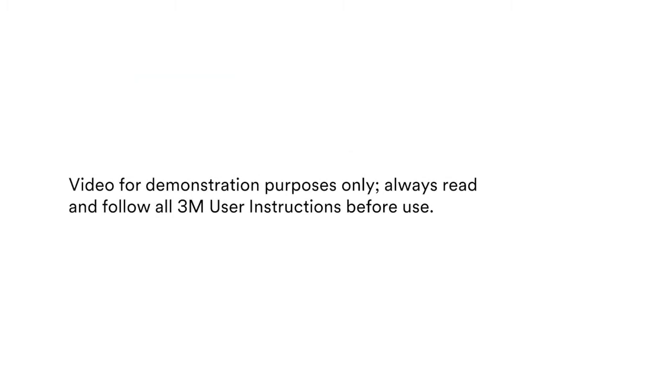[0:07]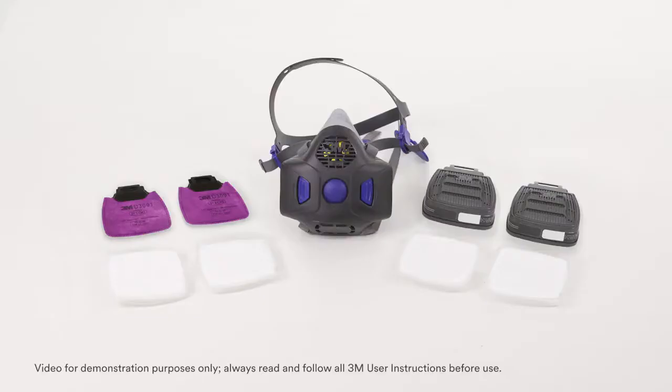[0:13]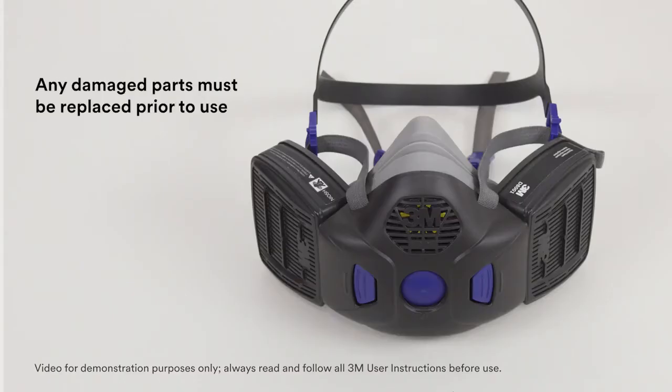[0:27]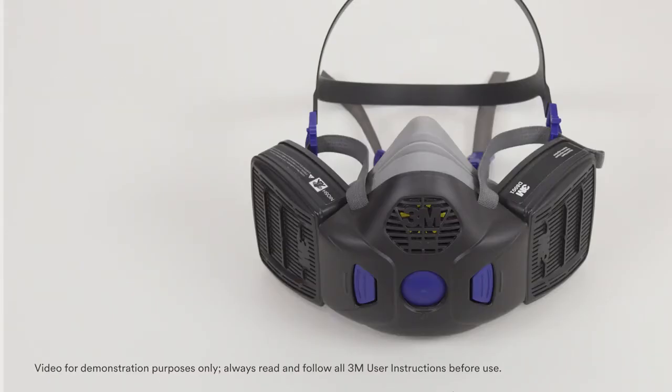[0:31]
Respirator system, including filters and cartridges, must be inspected before each use. If the respirator is dropped or otherwise impacted, causing potential damage, the entire system should be inspected again. Any damaged or defective parts must be replaced prior to use.
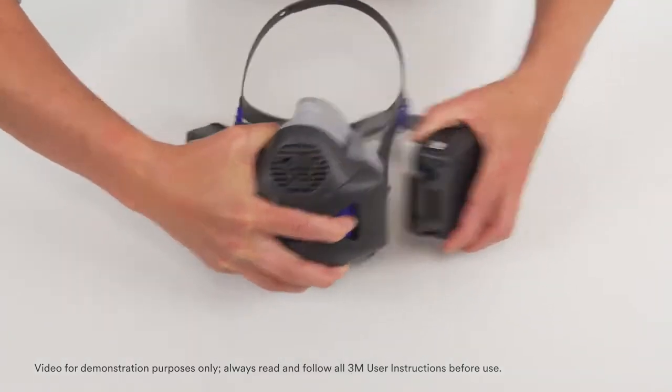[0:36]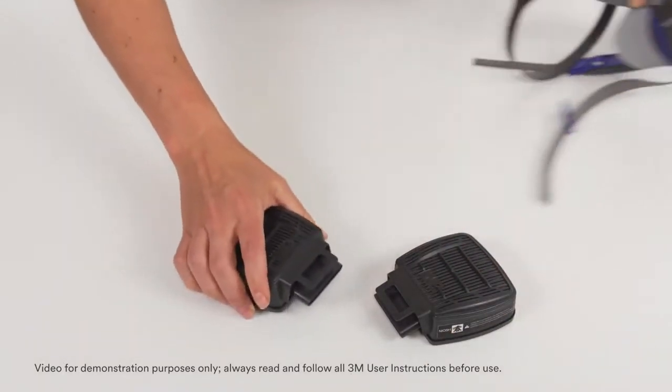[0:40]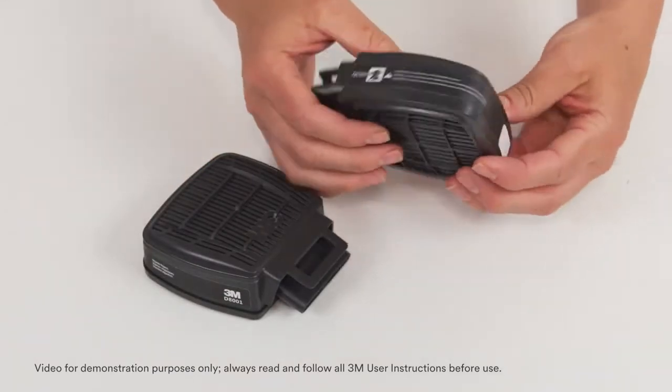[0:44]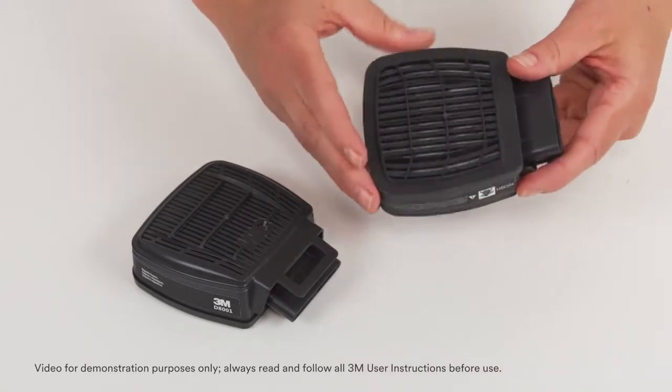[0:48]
Begin by removing any filters or cartridges attached to the facepiece. Inspect filter media for any visible damage and inspect all hard plastic components, looking for cracks or breakage. Ensure the connection area is clean and can be properly inserted and removed from the facepiece.
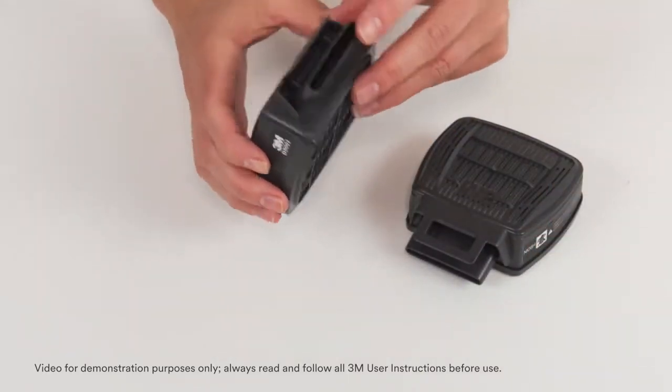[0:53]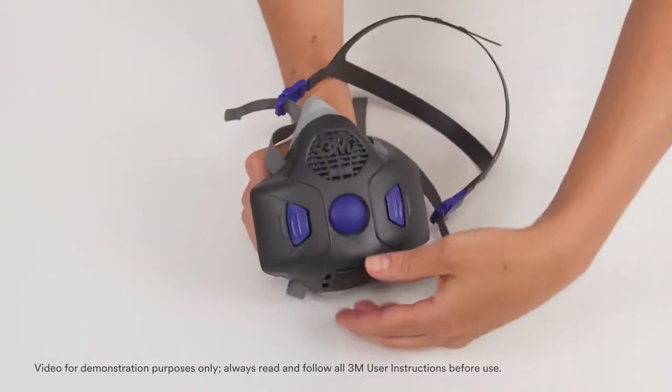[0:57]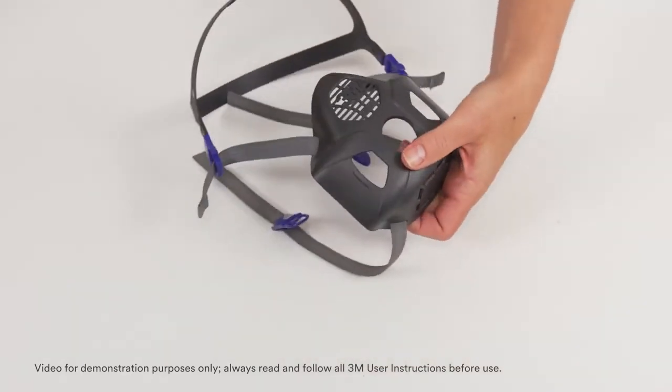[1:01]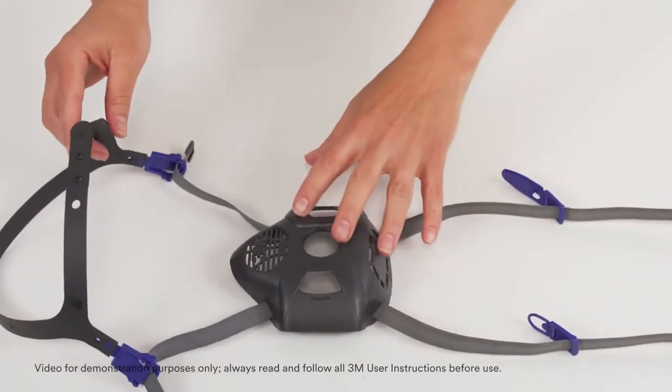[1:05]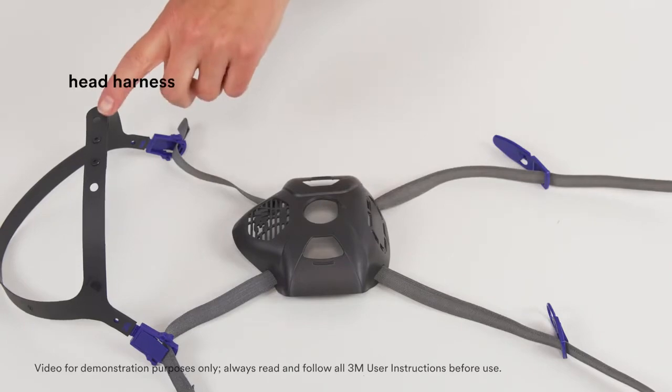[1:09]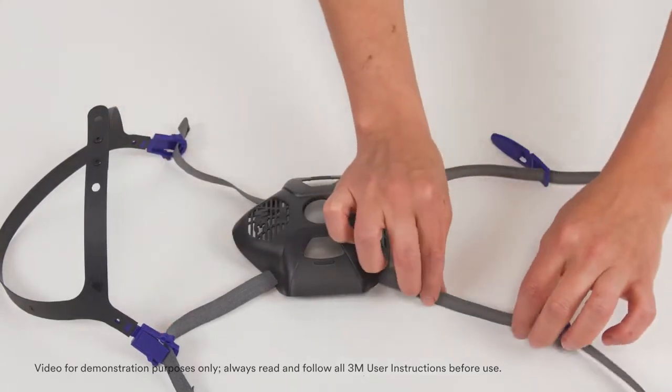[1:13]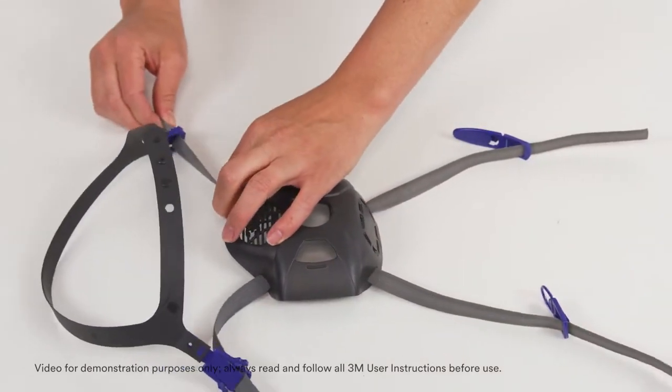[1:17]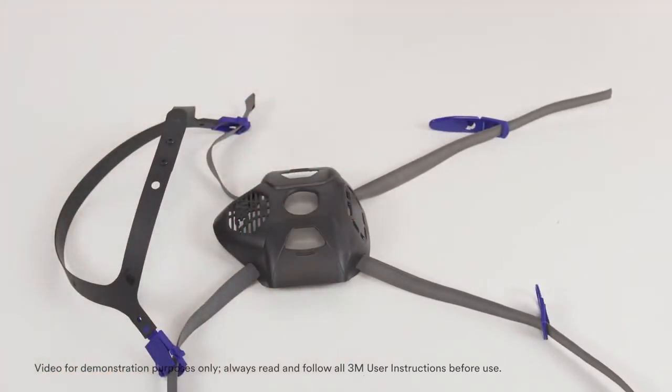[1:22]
Remove the head harness assembly by pulling down and outward on the bottom of the assembly. Inspect the head harness assembly, including the fascia, head harness, and buckles, for damage, cracks, and fatiguing. Make sure the straps are intact and have good elasticity. Pull each strap to see that it shrinks back to its original length.
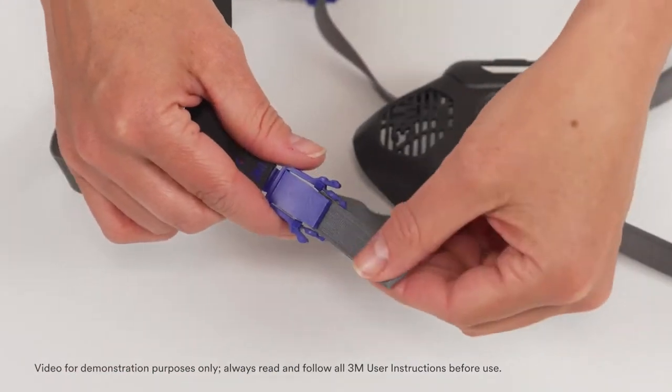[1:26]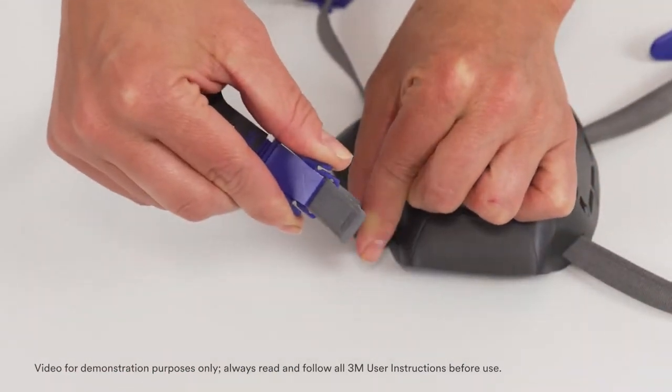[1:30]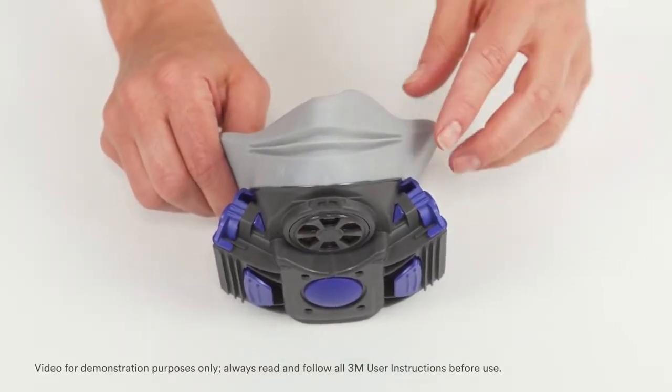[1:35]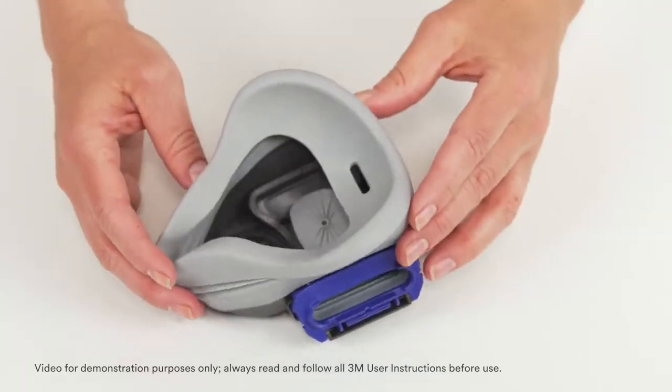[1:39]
Pull the harness straps through the buckles and then squeeze the buckle wings and pull the straps back through to ensure the straps move freely through the buckles. Examine the flexible silicone face seal. Check for distortion, cracks, tears, dirt, or other damage.
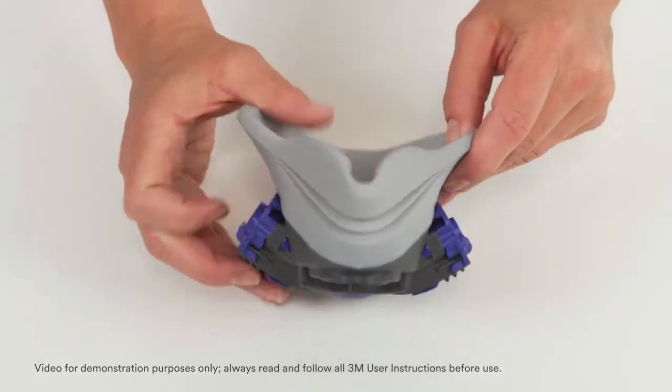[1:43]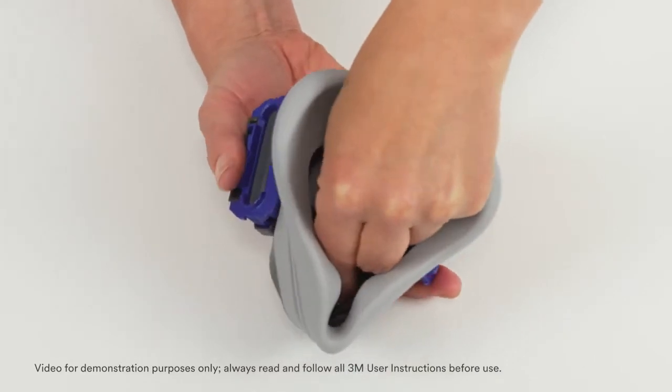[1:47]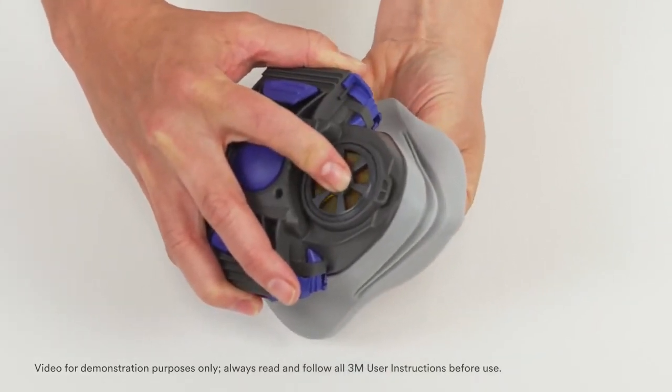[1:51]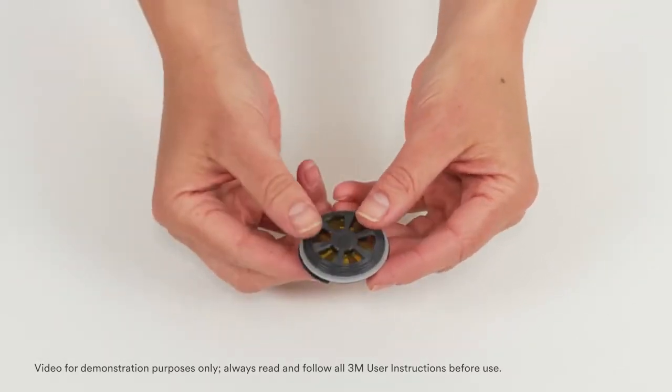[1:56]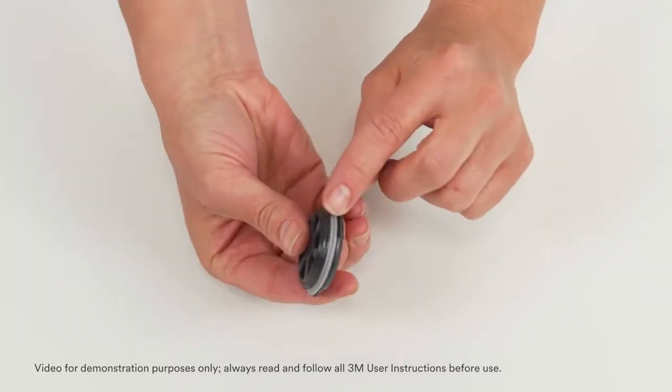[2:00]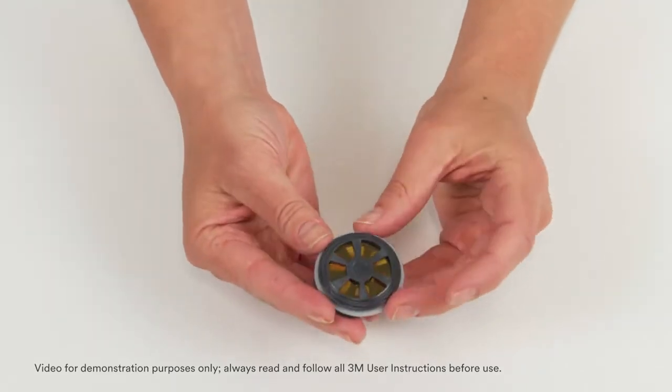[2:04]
To remove the speaking diaphragm for inspection, first, turn the speaking diaphragm counterclockwise a quarter turn. Next, from the outside of the respirator, push the speaking diaphragm inward to remove. Inspect the speaking diaphragm seal for any damage, inspect the plastic components for any damage, and inspect the diaphragm film material to ensure it is intact, looking for tears or holes in the film.
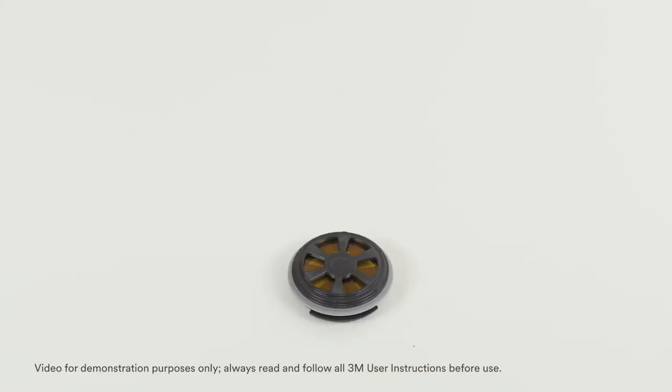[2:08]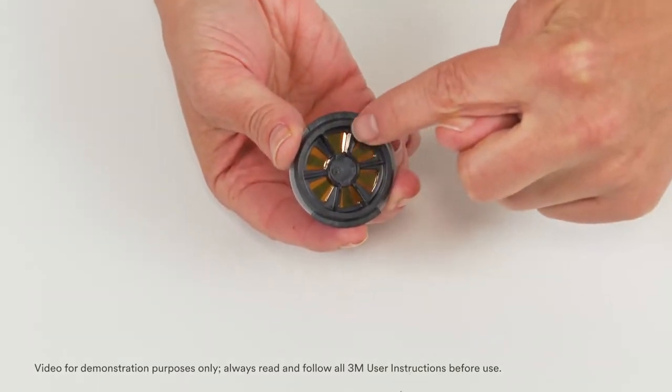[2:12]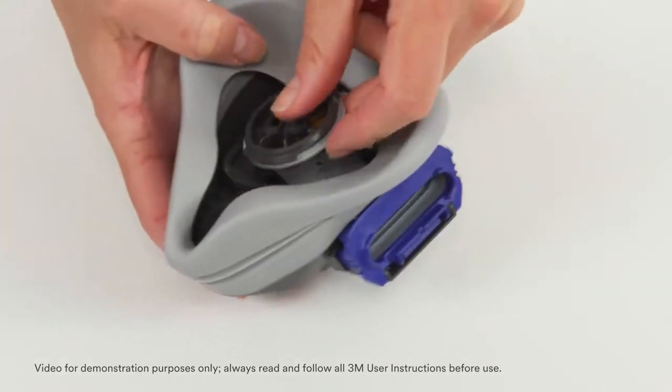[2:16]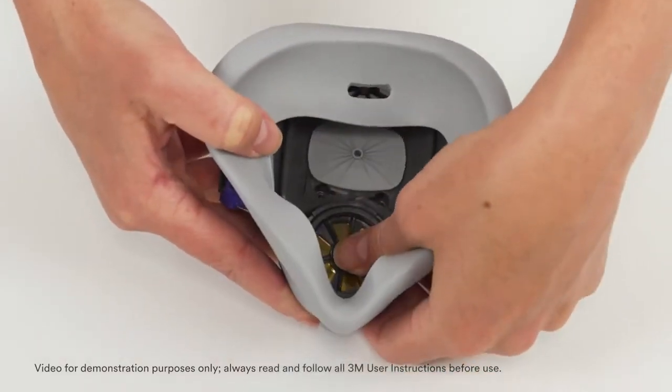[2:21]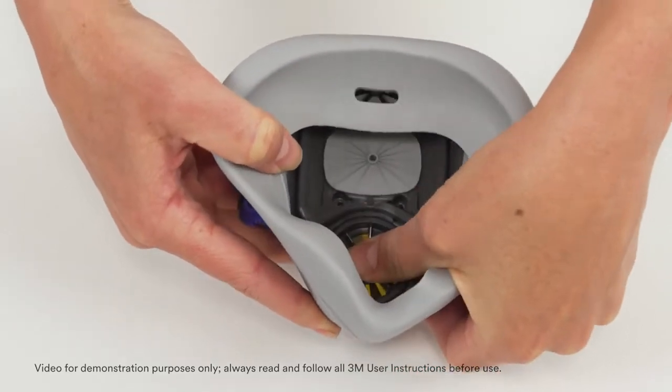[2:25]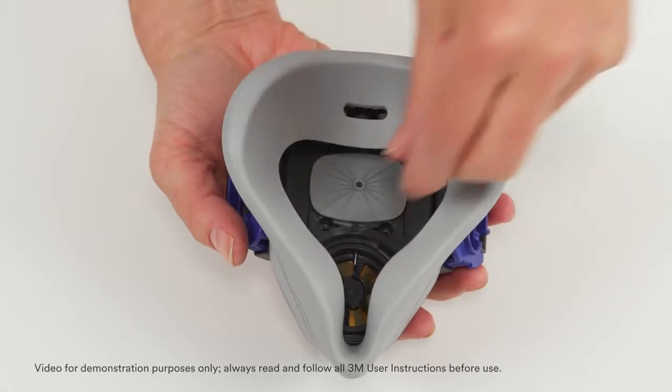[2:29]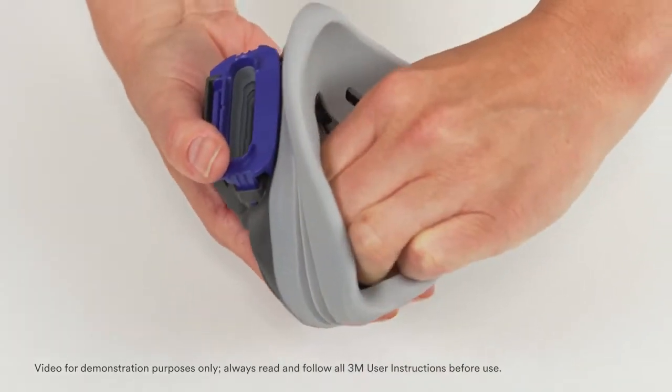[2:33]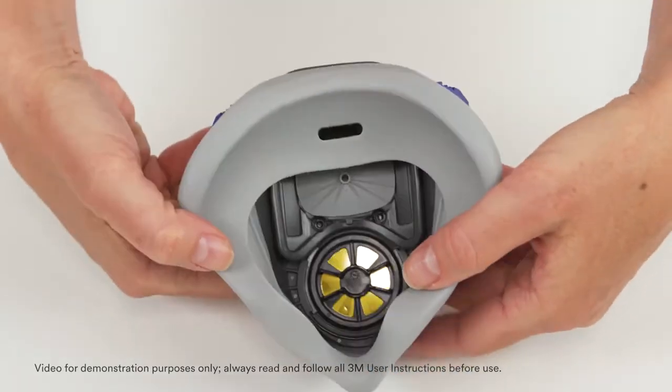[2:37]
To replace the speaking diaphragm, insert the speaking diaphragm into the facepiece opening with the speaking diaphragm wings aligned vertically. Using your thumb, press down on the center of the speaking diaphragm, pushing it fully into the opening to ensure it is evenly and fully seated. With slight downward force, use the thumb and index finger to rotate the speaking diaphragm 90 degrees clockwise until the stop guards engage. The wings should now be horizontal.
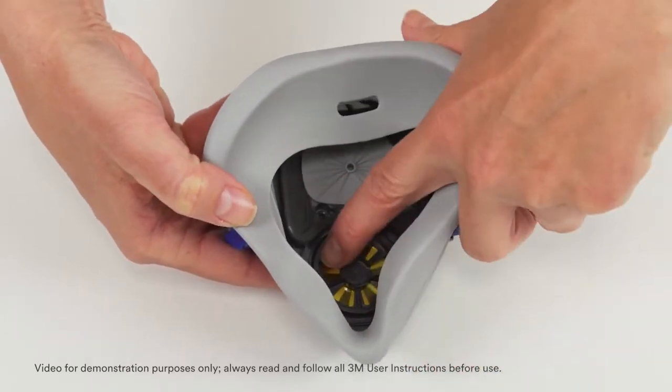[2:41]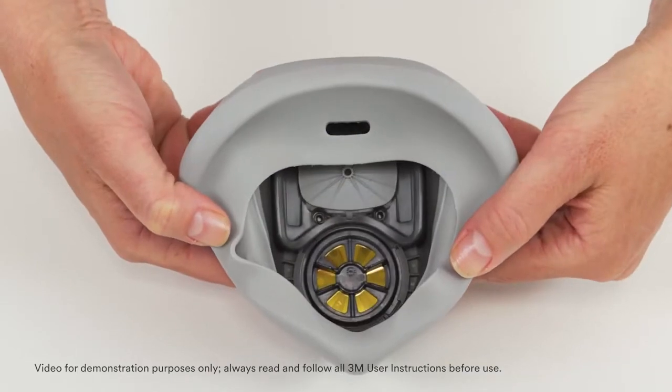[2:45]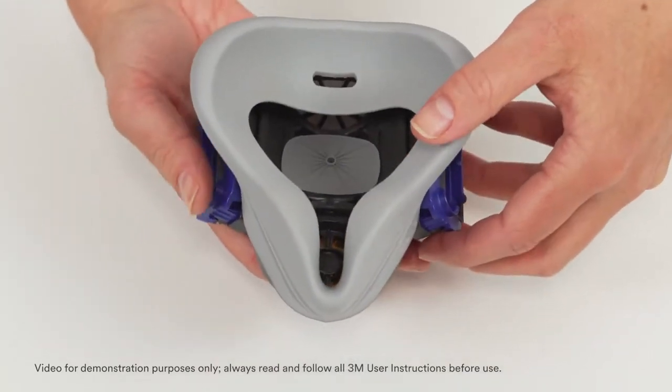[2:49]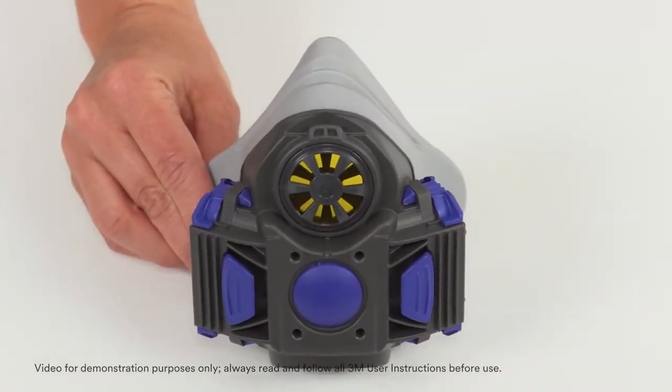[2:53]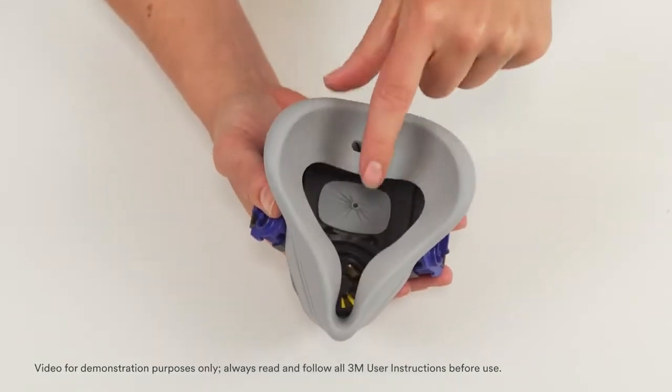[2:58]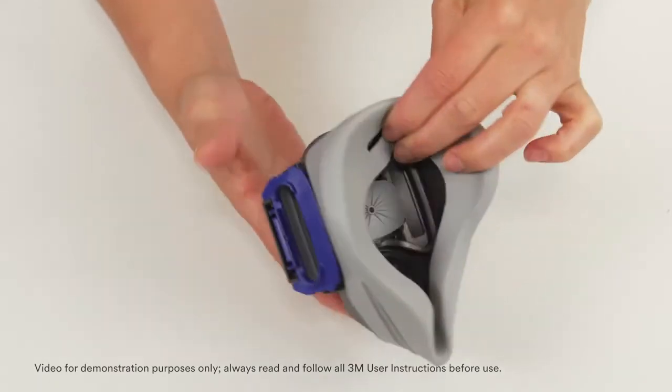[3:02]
Visually inspect the speaking diaphragm for signs of misalignment or incomplete placement. If there is any indication of incomplete placement, remove the speaking diaphragm and repeat the installation procedure. Continue by inspecting the inhalation and exhalation valves for signs of debris, distortion, cracking, or tearing. Ensure the valves lay flat against the valve seat.
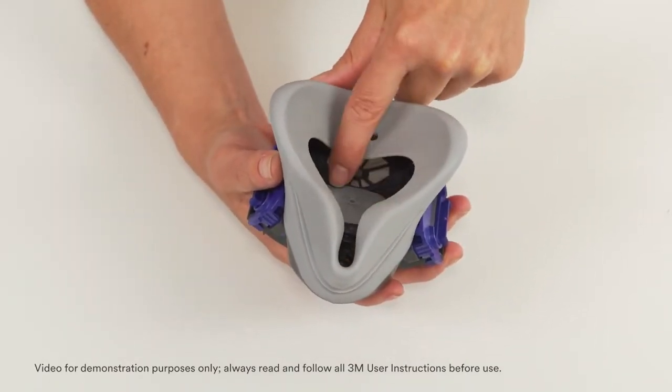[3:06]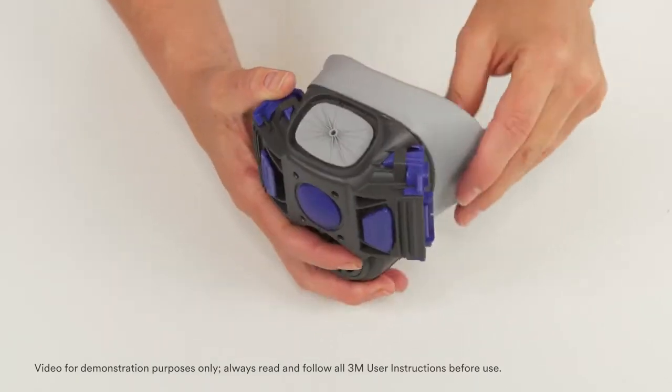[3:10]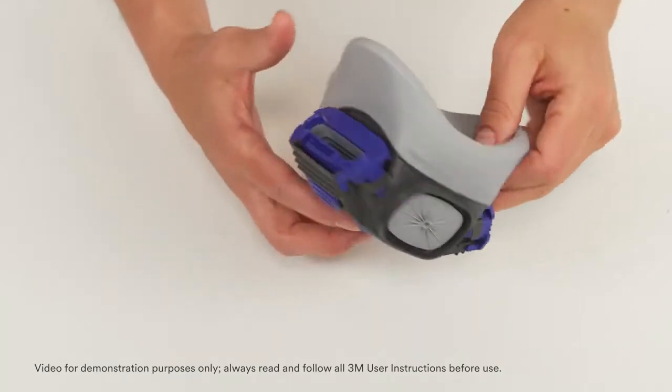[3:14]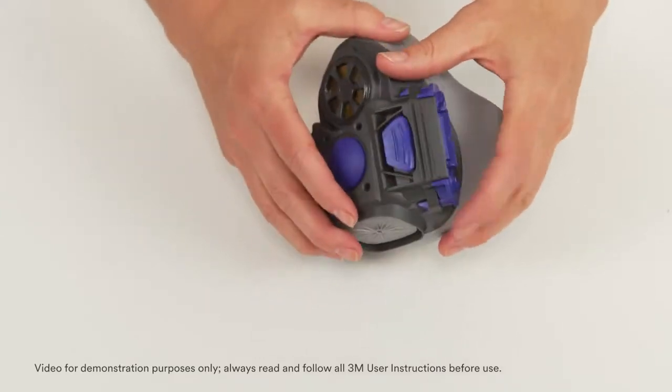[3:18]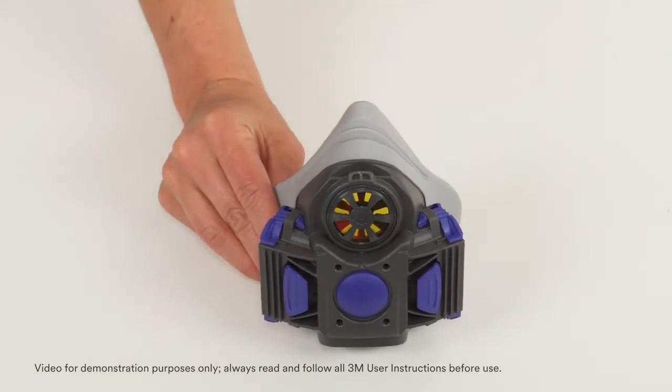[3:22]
Examine the cartridge or filter sealing area for distortion or for dirt or particulate that could prevent filters or cartridges from sealing to the respirator. Examine remaining plastic components for damage.
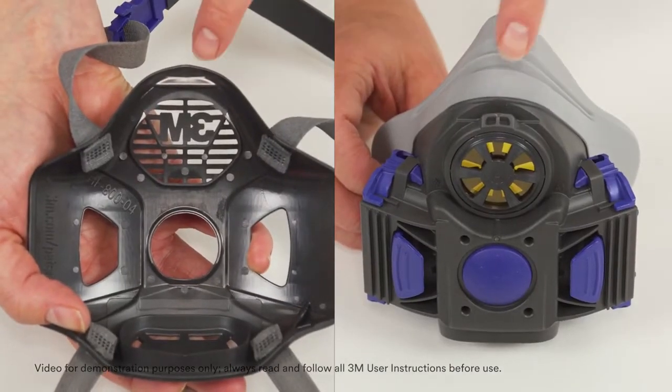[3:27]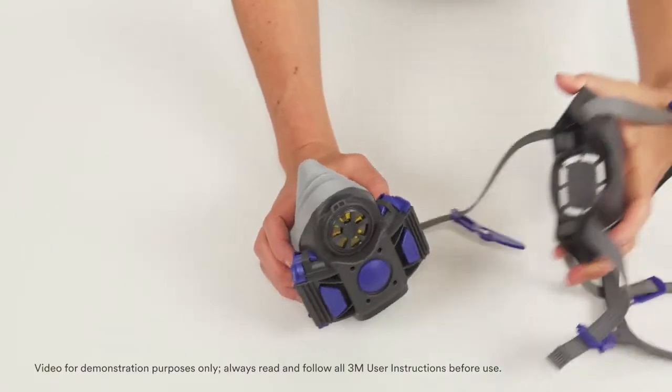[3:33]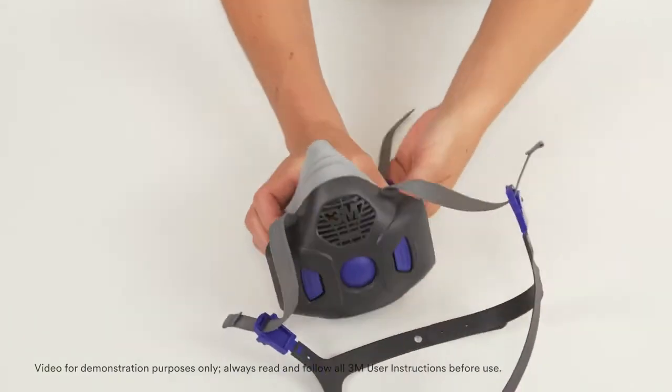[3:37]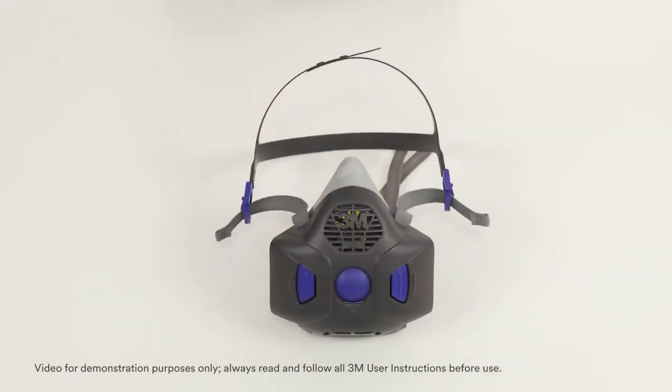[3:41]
To reassemble, install the respirator strap assembly to the facepiece by aligning the ledge on the fascia to the latch located above the speaking diaphragm. Next, push the fascia down and over the exhalation valve area until it is seated. You can hold the respirator up by the head harness and raise it up and down to test the fascia connection to the facepiece.
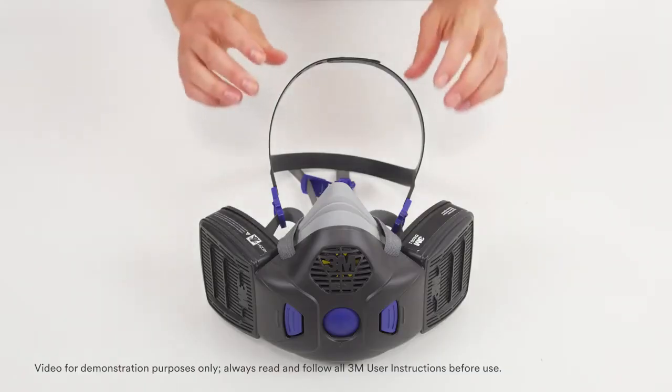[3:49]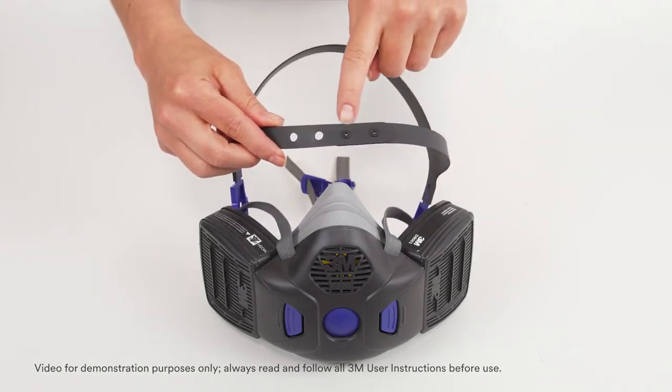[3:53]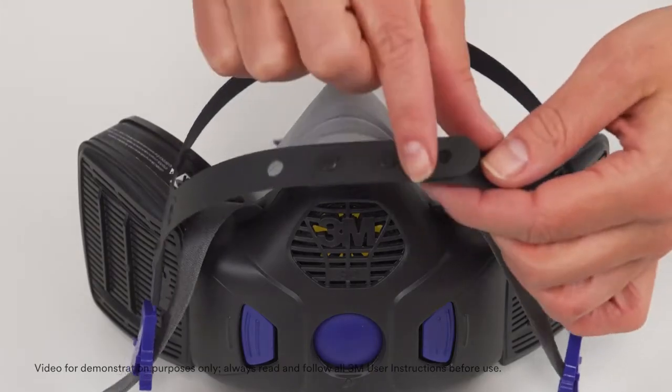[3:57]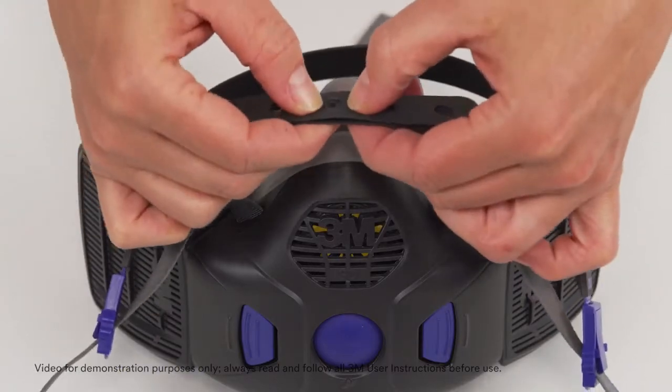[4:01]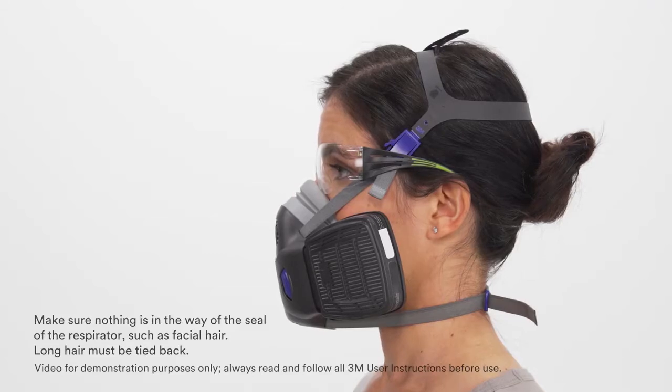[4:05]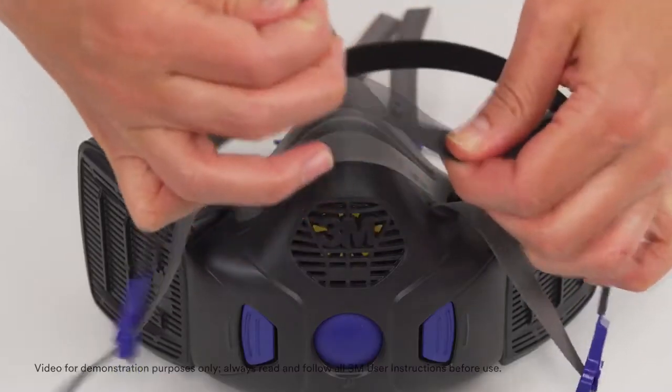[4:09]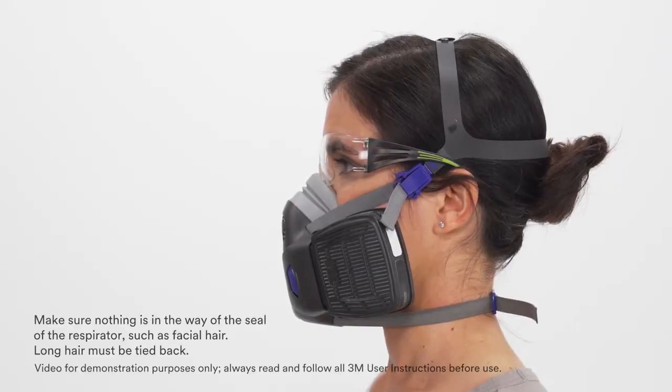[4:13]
The head cradle pin locks can be adjusted to make the cradle smaller or larger depending on head size. Adjust the pin locks so the cradle fits comfortably on your head. Notice that adjusting the head cradle to a smaller position can pull the buckles up and away from the temple bars of glasses. Making the head cradle larger can lower the buckles so they rest below the temple bars of glasses.
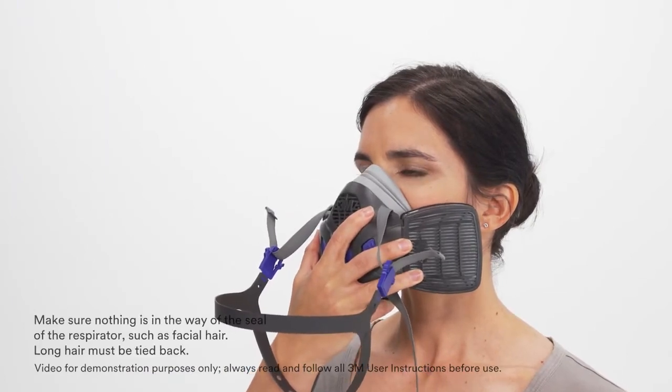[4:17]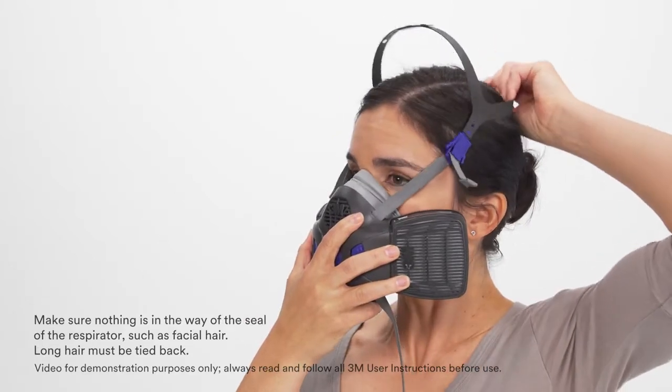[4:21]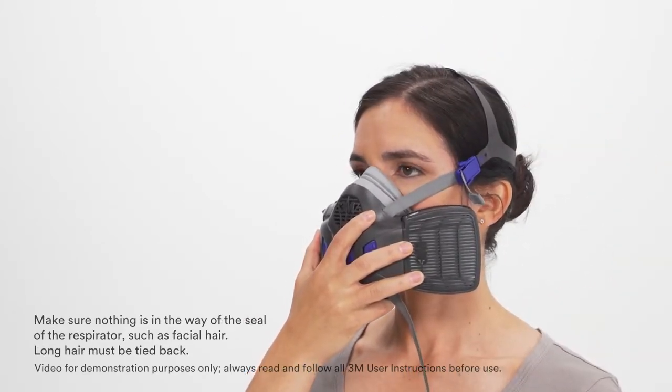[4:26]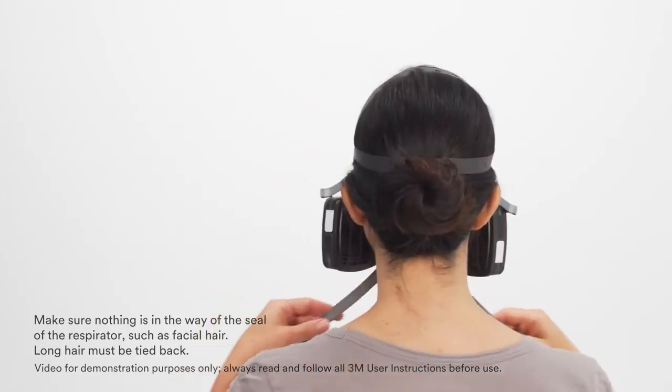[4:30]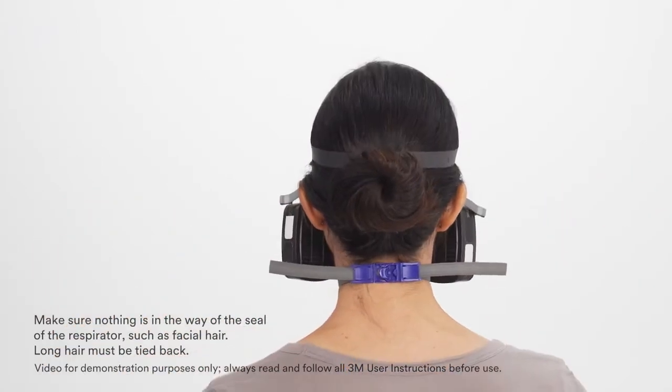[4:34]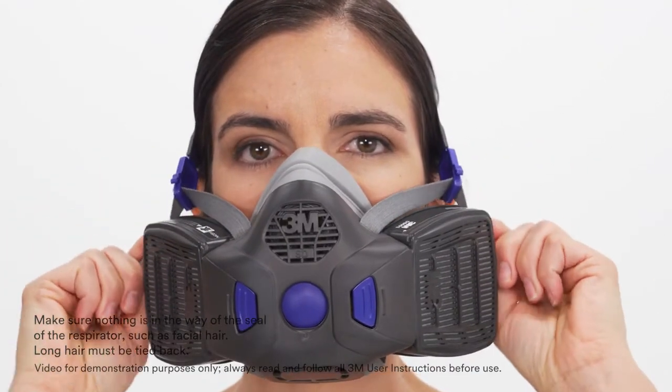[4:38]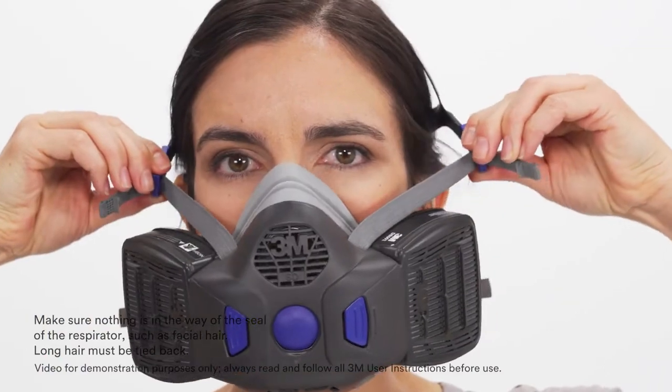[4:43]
To don the facepiece, place it over your mouth and nose and pull the head cradle over the crown of your head. Secure the neck strap by hooking the ring into its latch. Pull straps to tighten. The head cradle straps can be easily adjusted. Pull the straps to tighten and squeeze the buckle wings and pull outward to loosen.
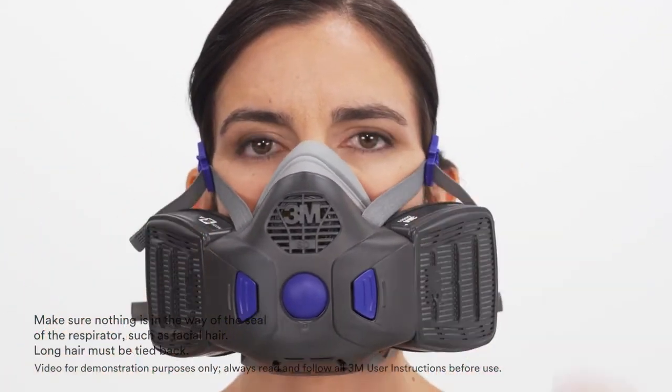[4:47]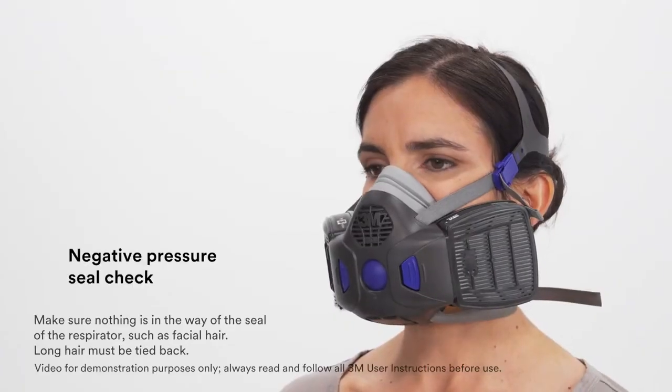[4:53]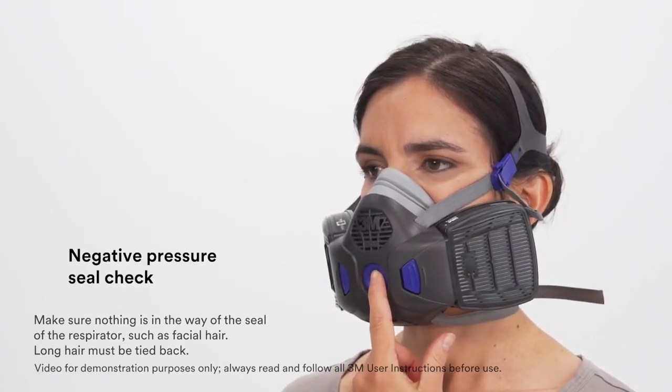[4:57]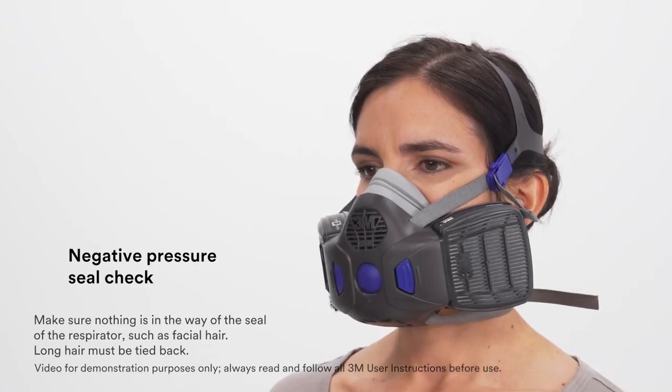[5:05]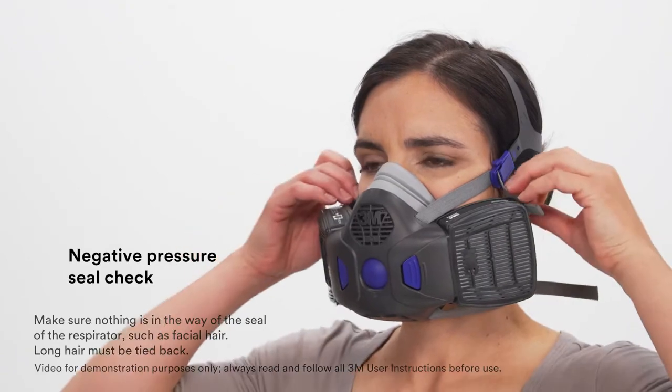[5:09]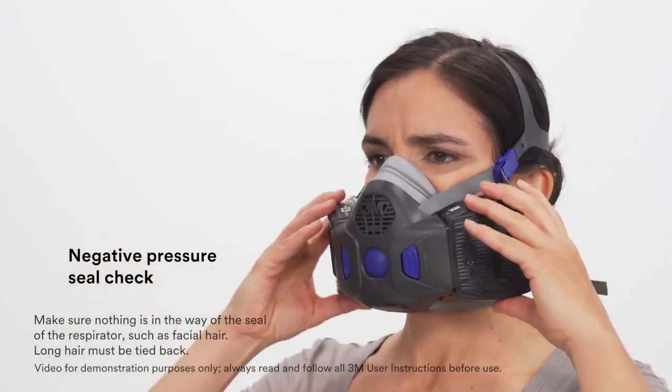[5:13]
To conduct a negative pressure seal check, don the facepiece normally and lightly press the seal check button until you feel resistance. Hold the button and inhale gently. If you feel the facepiece collapse slightly and pull closer to your face with no leaks between the face and the facepiece, a proper seal has been obtained. If you feel leakage, readjust the respirator fit and repeat the seal check until a proper seal is obtained.
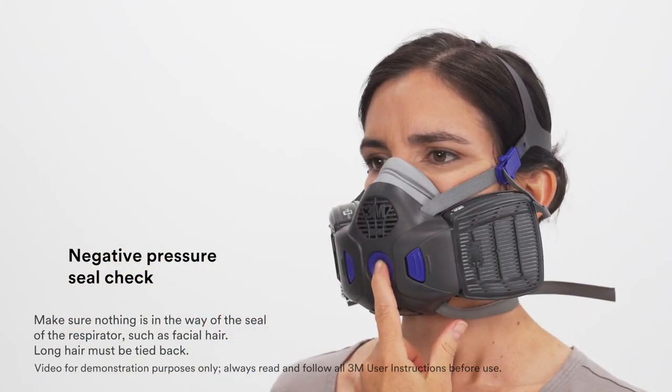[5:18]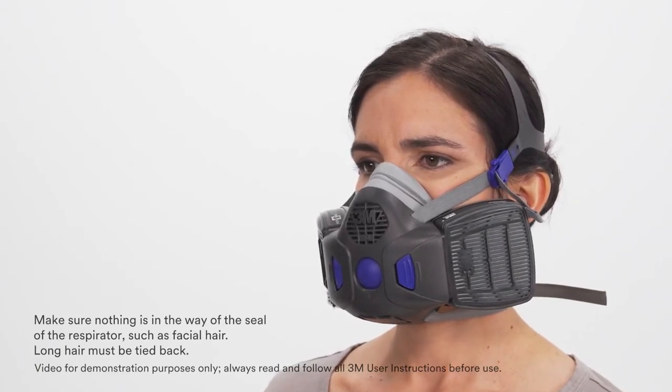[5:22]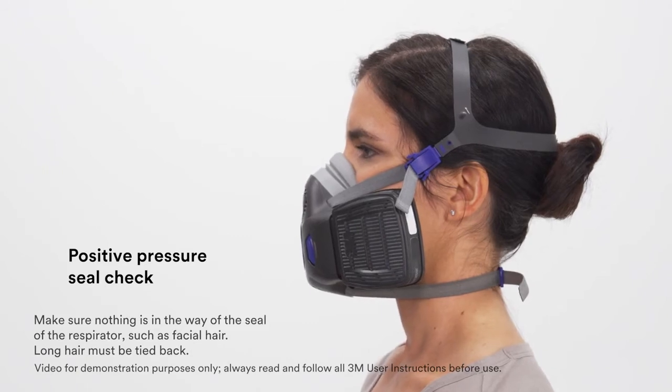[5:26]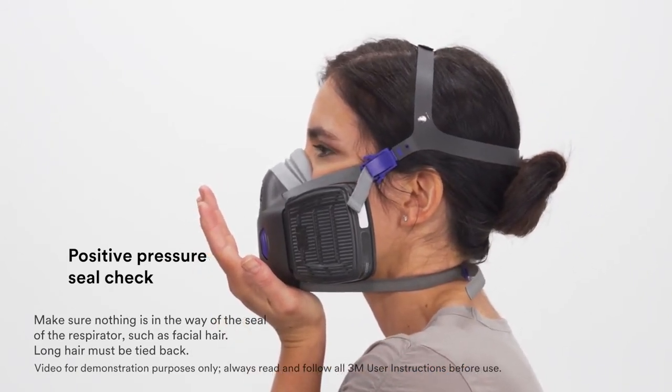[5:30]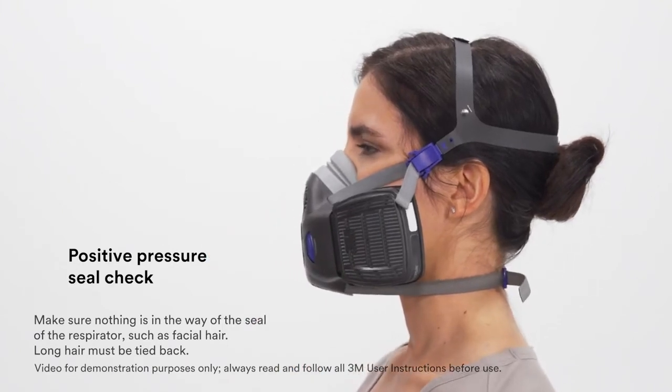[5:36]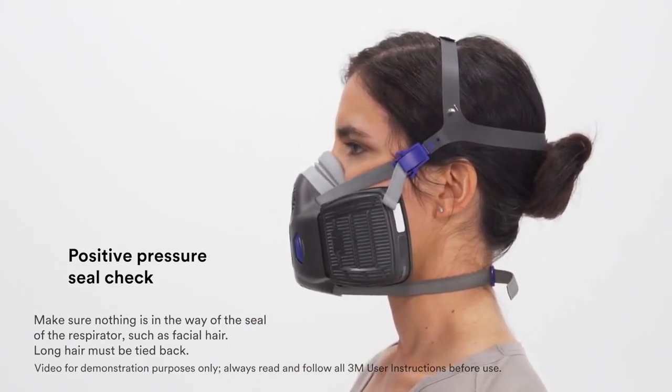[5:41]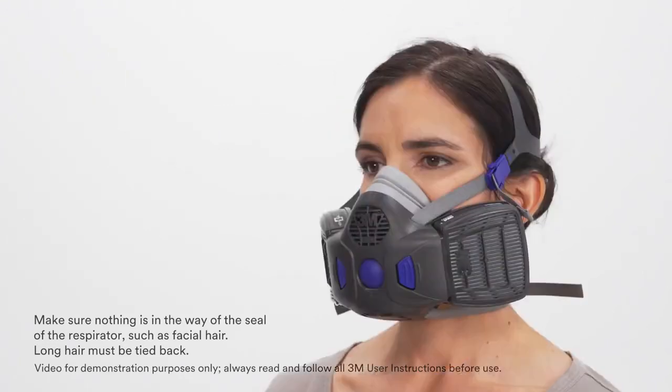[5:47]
To conduct a positive pressure seal check, cover the opening in the exhalation valve cover with the palm of your hand and exhale gently. If the facepiece bulges slightly and no air leaks are detected between your face and the facepiece, a proper seal has been obtained. It is important not to exhale too hard. The goal is to check the seal, not disturb the seal between the facepiece and the face.
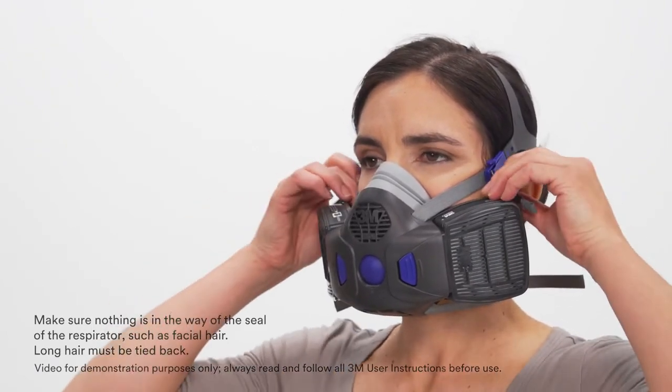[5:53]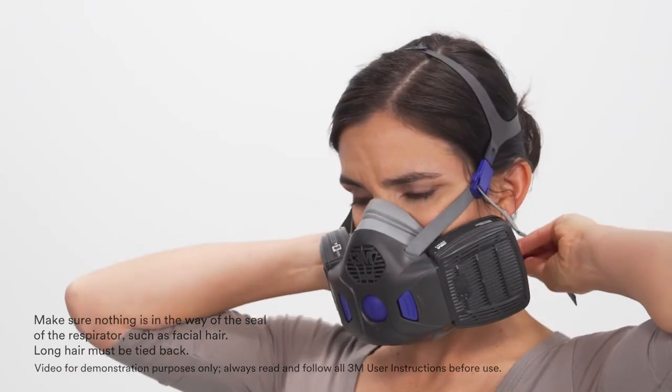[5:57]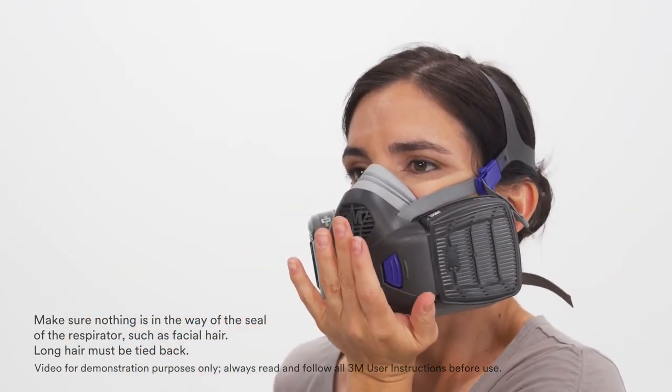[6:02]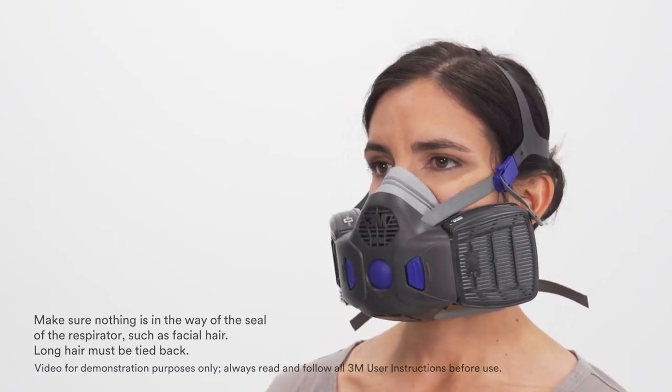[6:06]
If face seal air leakage is detected, reposition the respirator and/or readjust the tension of the straps to eliminate air leakage. Repeat the user seal check until a proper seal is obtained. At least one of these seal check methods must be passed each time the respirator is donned. If a proper seal cannot be obtained, the respirator cannot be worn in a contaminated area.
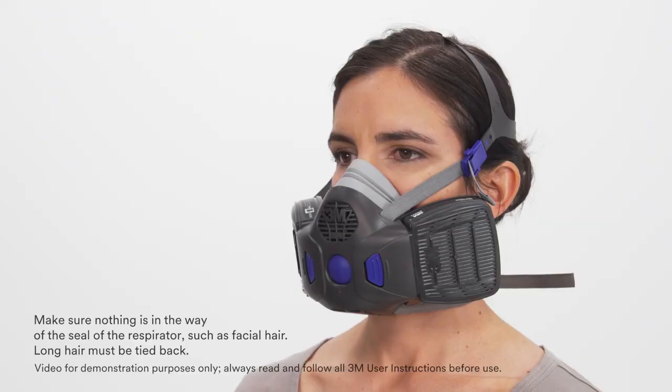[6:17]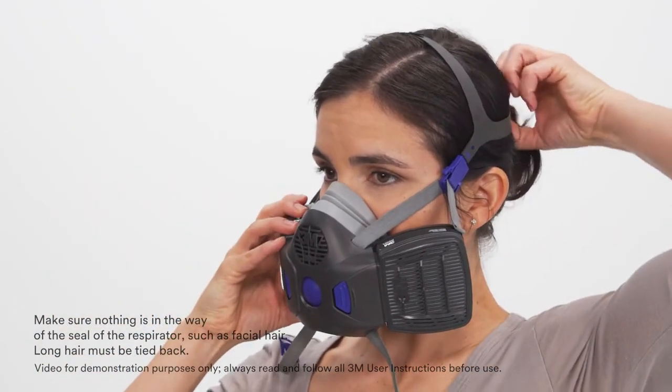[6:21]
To remove the respirator, unclasp the bottom straps and pull the head harness over the head.